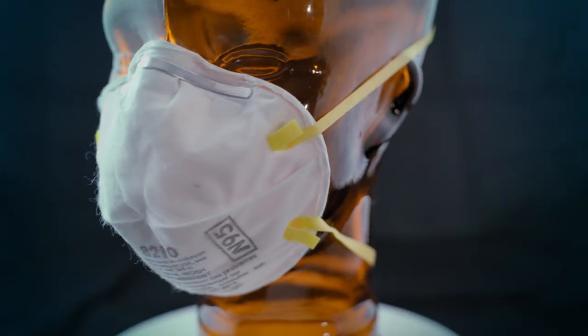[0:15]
As we've all heard, in the wake of the COVID-19 outbreak, there's been a worldwide shortage of some critical medical supplies. The N95 respirator mask is one of the items that's in extremely short supply right now. It's been identified as one of the only disposable respirators that's effective in helping to block the transmission of the virus. After some research, we were able to find a few DIY 3D printed N95 substitutes in PPE communities that claim to offer some protection when no N95 is available.
One design that stood out was from copper3d.com. We'll leave a link in the description. The design is open sourced, it's simple, the print is relatively fast and easy, and the product is reusable and can be shipped in a flat pack.
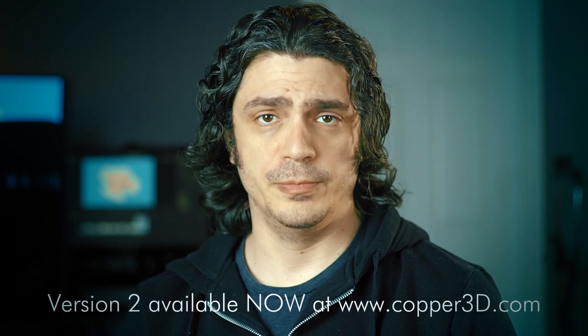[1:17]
Copper3d.com on their website says that this design is only intended to be a prototype and not a final product. They're currently taking notes from members of the community, making improvements to their designs, and from what I understand, they're going to be releasing a version 2 very soon.
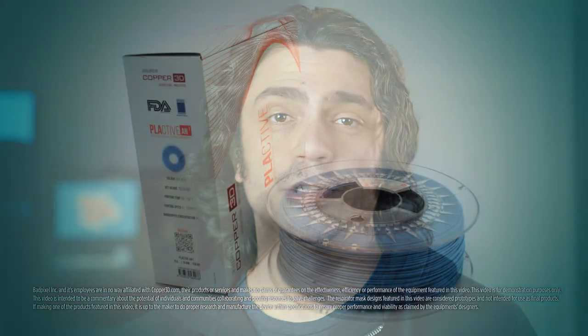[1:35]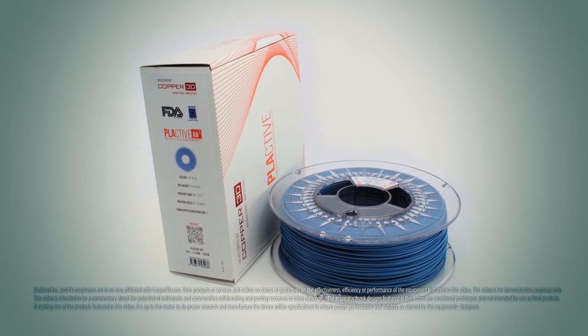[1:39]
Now, a bit of a disclaimer here. We're not medical professionals, so we can't speak to the efficacy of these devices. Copper3d.com claims that this mask design is only viable if it's printed using PLActive, which is their proprietary brand of antimicrobial PLA 3D printer filament.
Once again, the idea here is that these devices are a last resort measure, only to be used when no N95 or equivalent is available. Thinking is that some form of protection is better than nothing at all. When using these devices, people should by no means feel invulnerable to the obvious risks and should continue to act responsibly, practice good hygiene, social distancing, and continue to attempt to limit exposure as much as possible. Now, with all that said, let's dive in.
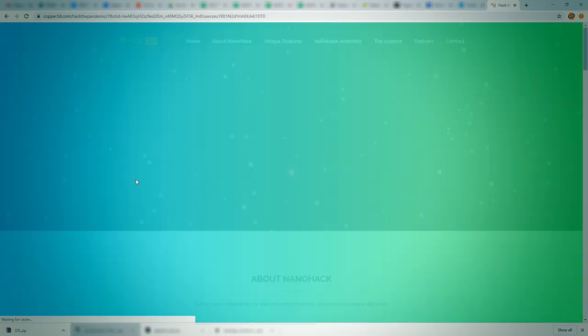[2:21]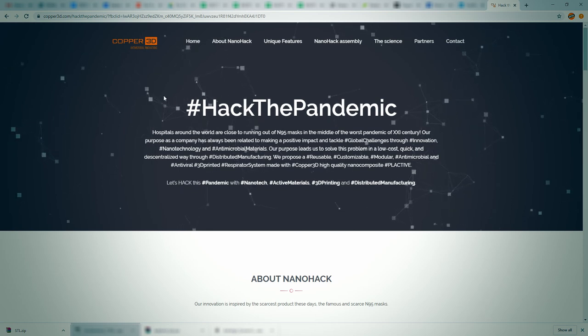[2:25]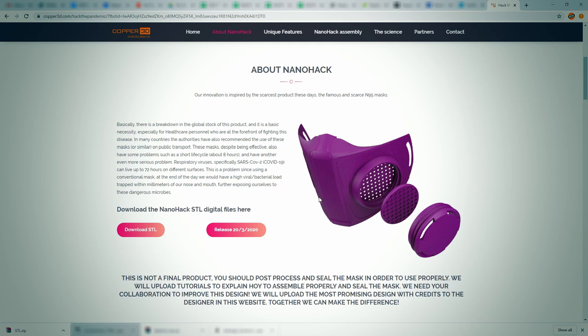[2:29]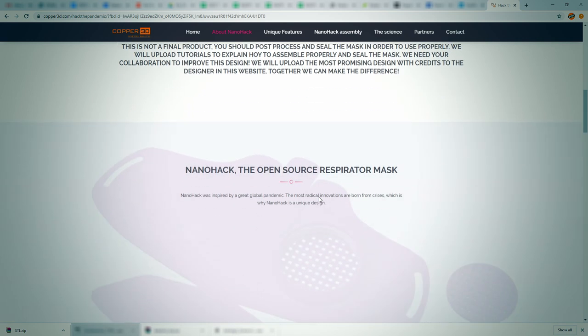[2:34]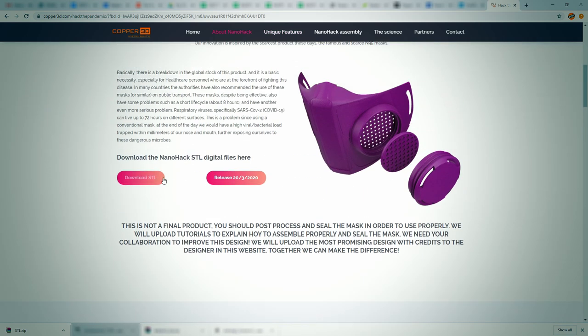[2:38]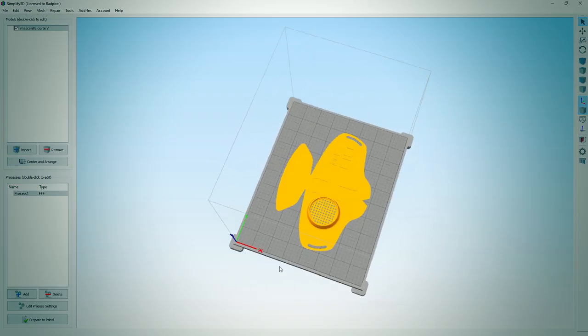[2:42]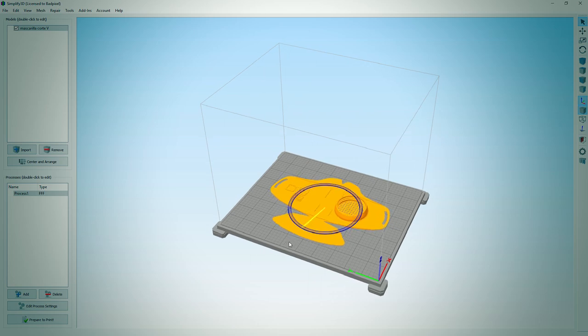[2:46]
Here's copper3d.com/hackthepandemic. On this page, you'll find the most recent design of the copper3d mask and some print and assembly instructions. There's no CAD data here, it's just STL files, but they're good to go. So if that's the way you want to run, you just download the files and drop them into your favorite 3D printer software. Here we see we're using Simplify 3D and the stuff just goes in and it prints great.
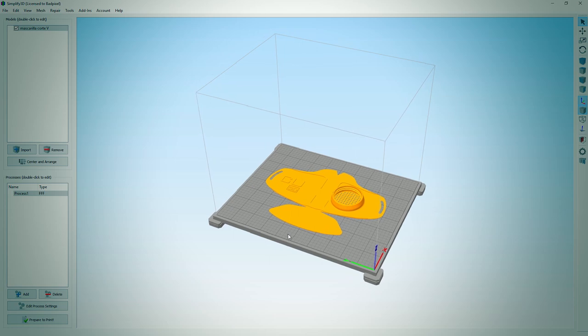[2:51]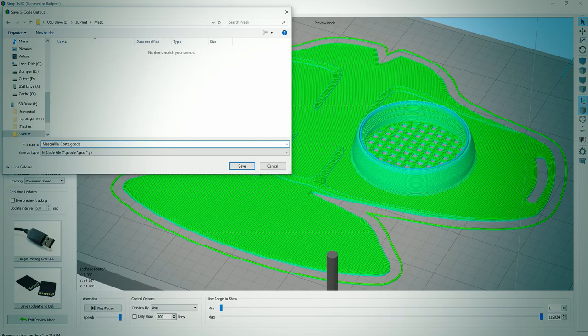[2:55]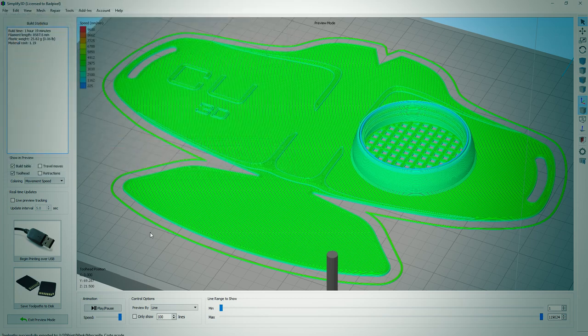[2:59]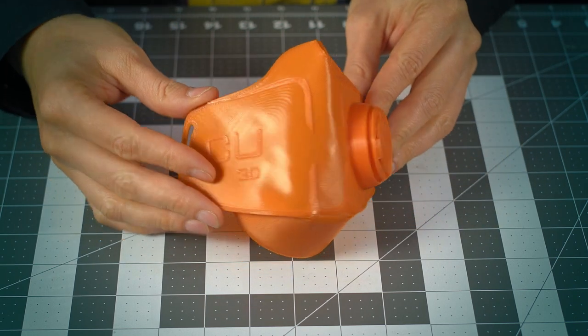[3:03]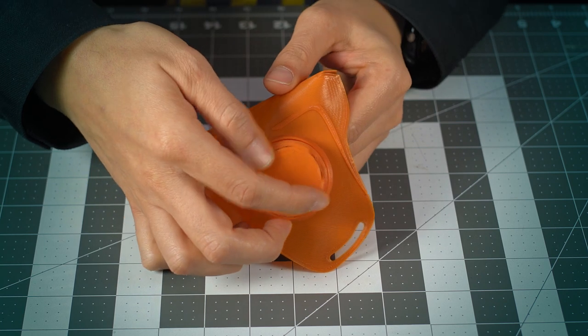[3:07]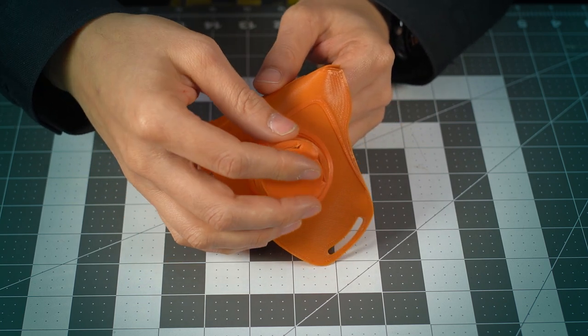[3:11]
We can see that the largest component of this print, which is the main body of the mask, fits easily on the bed of the MakerGear M2, and there's a lot of room to spare. The M2 is a pretty standard bed size, so you shouldn't have any problems with build size on this. This is an unmodded print of the original Copper 3D design. After a few tests, we noticed a couple of issues that were pretty easily solvable with a little bit of time in CAD, which we'll get into in a minute.
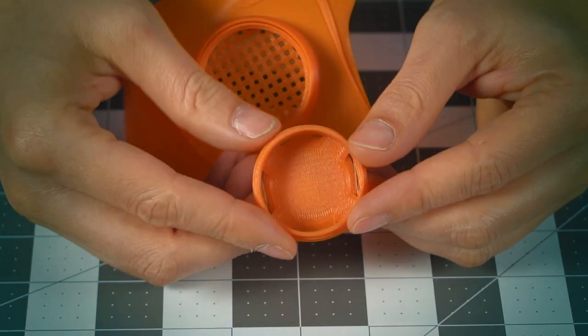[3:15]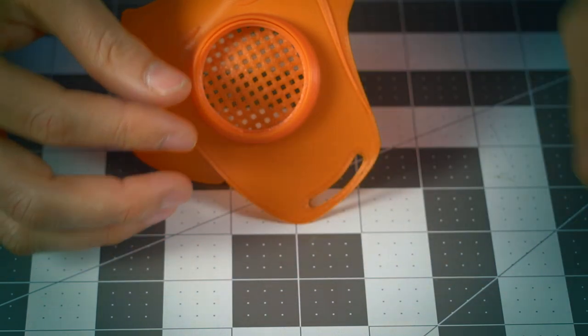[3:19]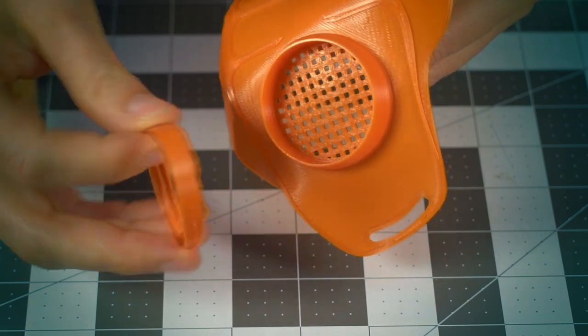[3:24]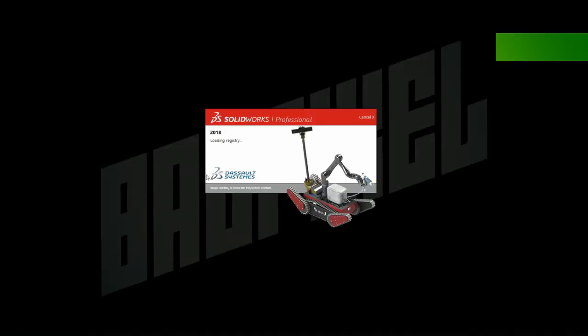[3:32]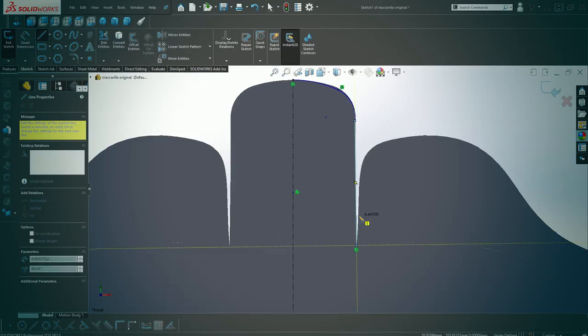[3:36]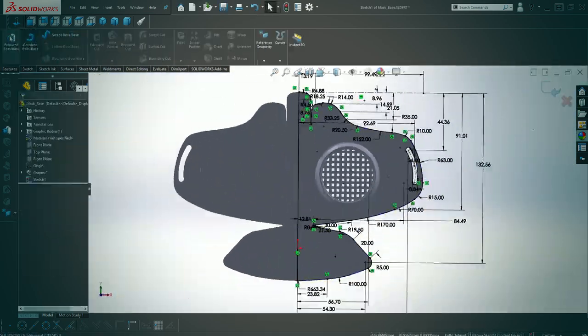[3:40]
Here we can just see some issues with the cap. There were some printing failures due to long spans and some rigidity issues in the walls of the port. There were some failures in the threading, etc. We're using Solidworks for all of our CAD work on this. So basically what we did was just bring in the STL file of the original design and trace it out. Then we modified our Solidworks model.
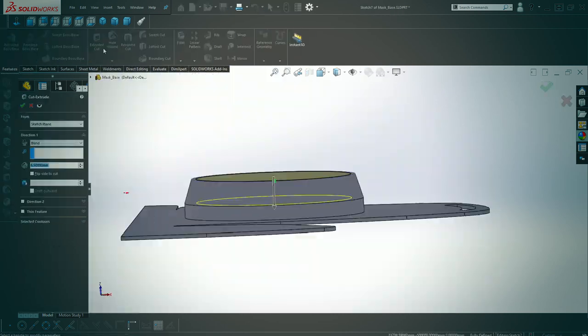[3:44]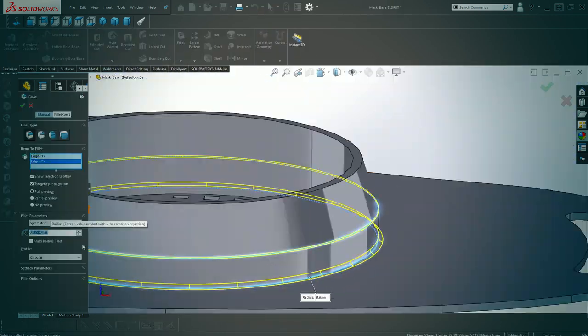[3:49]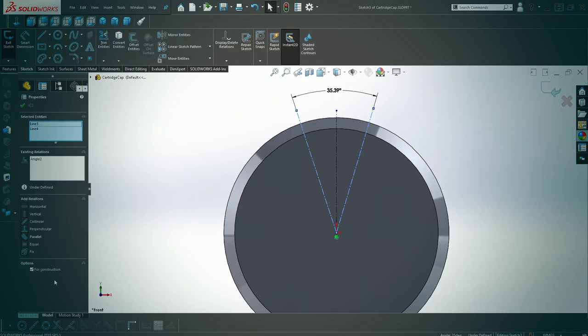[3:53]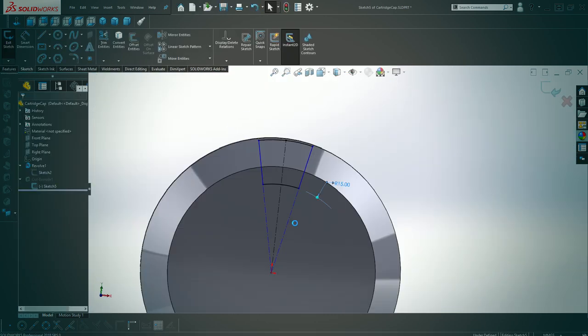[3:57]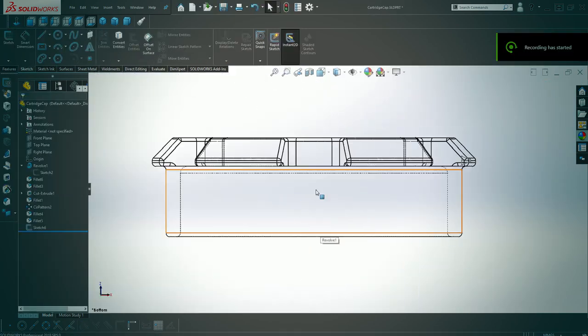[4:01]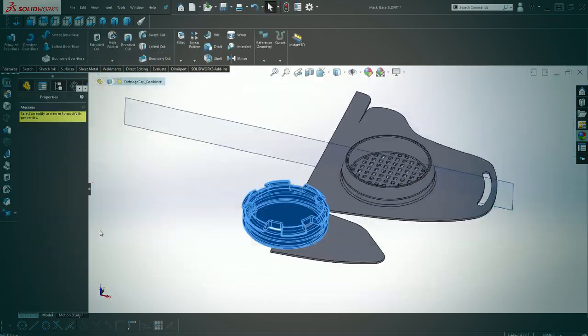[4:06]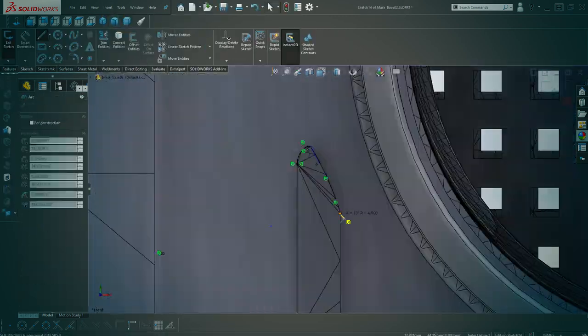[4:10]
So the first issue that we noticed on our test prints was that it was incredibly hard to breathe through one port. The second problem was some rigidity issues in the port walls. If you heat it up and cooled it down a few times when you were forming it to your face, we noticed that the port would start to warp, and this would affect the threading and the overall fit and seal of the cap.
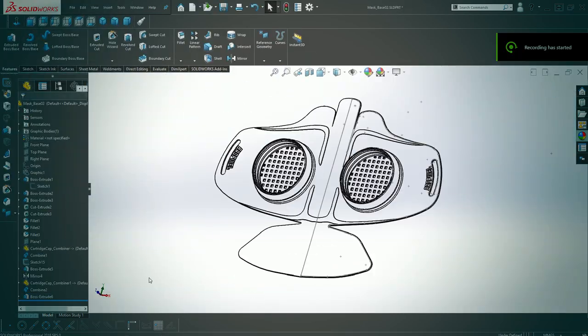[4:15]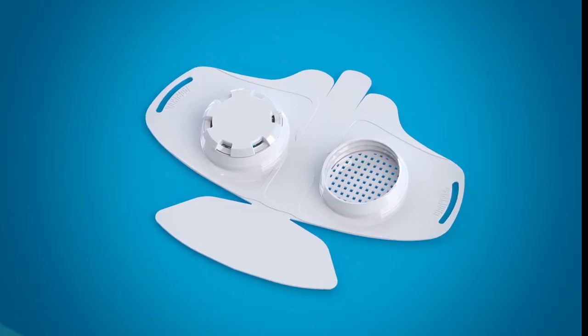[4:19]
Now, our solve for this was a redesign of the cap and thread assembly. We found that once we thickened those port walls and carefully redesigned the tolerances on the thread, we were getting a much more confident fit with the screw cap. The print was able to withstand a lot more heating and cooling cycles without failure in the port areas.
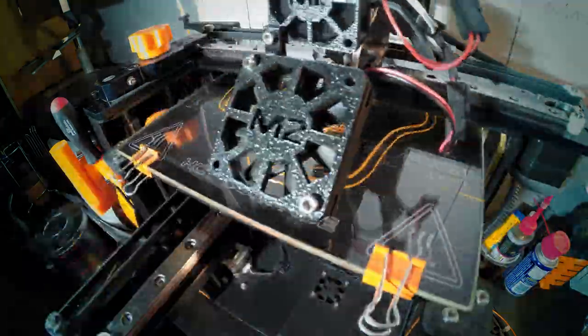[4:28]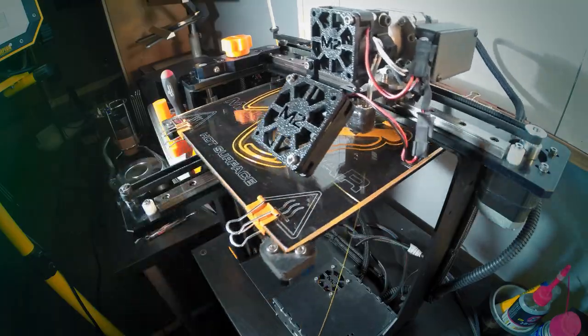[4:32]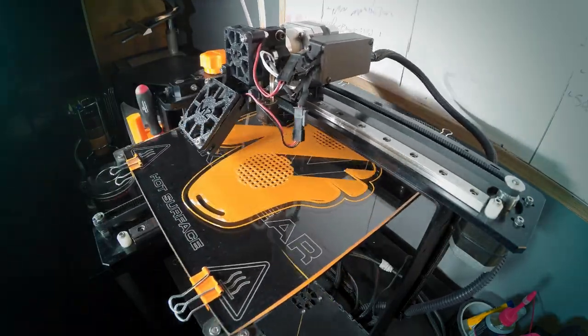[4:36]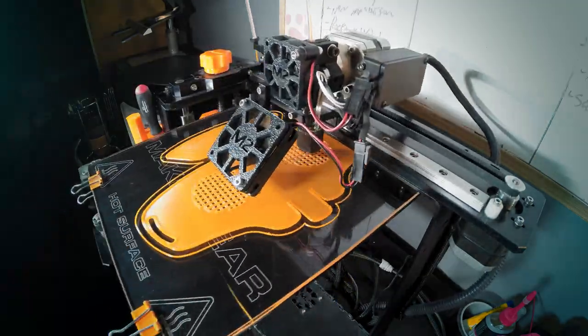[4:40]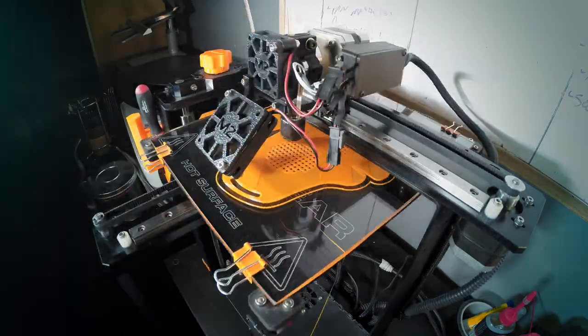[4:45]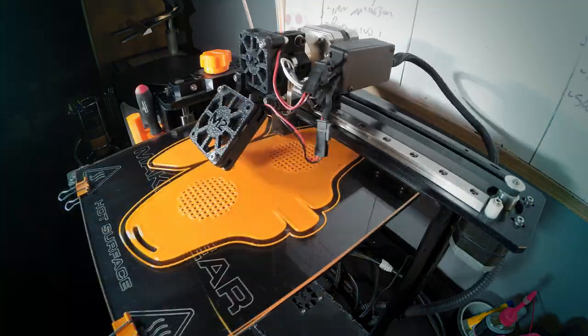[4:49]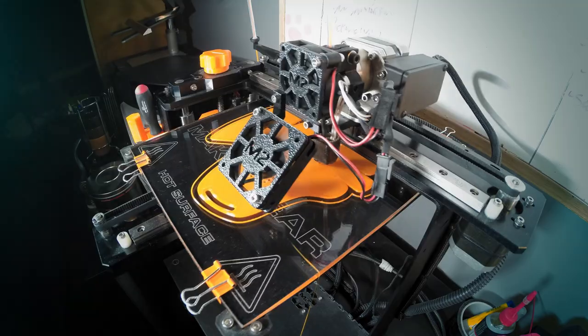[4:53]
For our tests, we were using a regular PLA-based 3D printer filament, which is not recommended for final printing of these devices. Again, in Copper 3D's documentation, they suggest you use PLActive. As with many things these days, PLActive is in pretty short supply and high demand. You can find suppliers that will source it for you, but currently the wait times are pretty long.
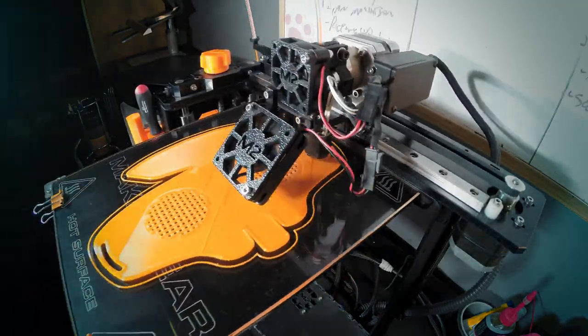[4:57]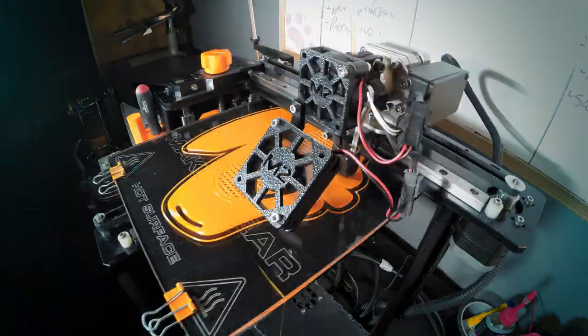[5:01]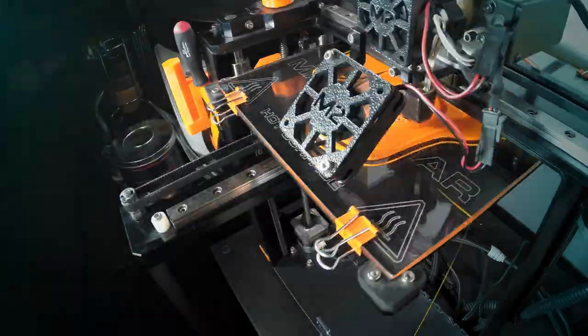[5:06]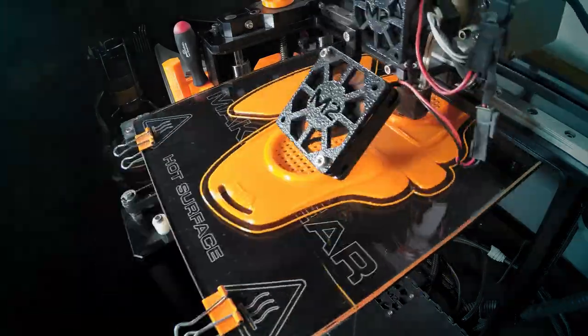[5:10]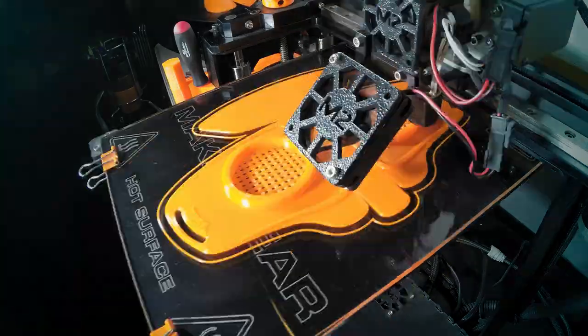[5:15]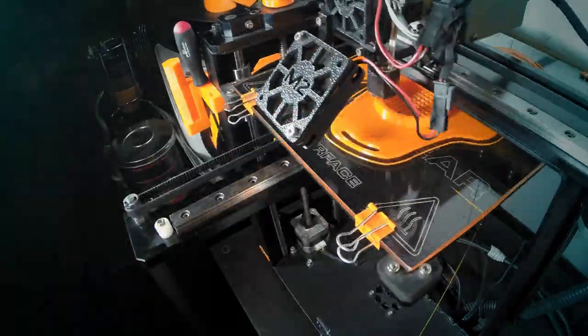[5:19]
And we found a lot of information out there that suggests that other FDA-approved antimicrobial materials could be used in place of PLActive if it can't be sourced. We managed to find something called Purement, which does have an FDA approval. It is antimicrobial, and it's PLA-based filament. We'll be moving on to Purement while we wait for our shipment of PLActive to arrive.
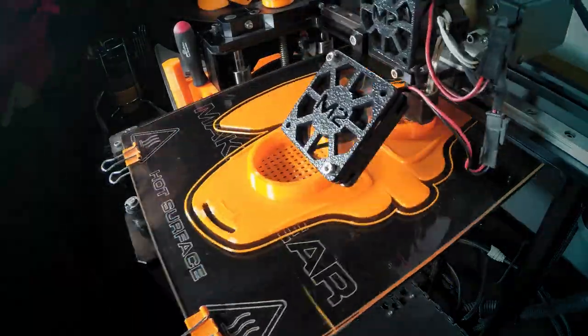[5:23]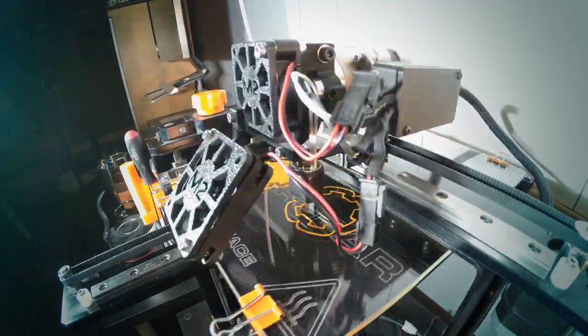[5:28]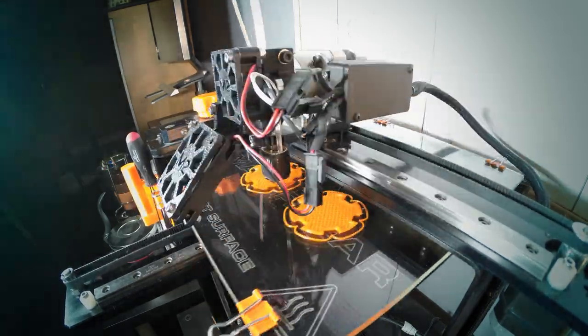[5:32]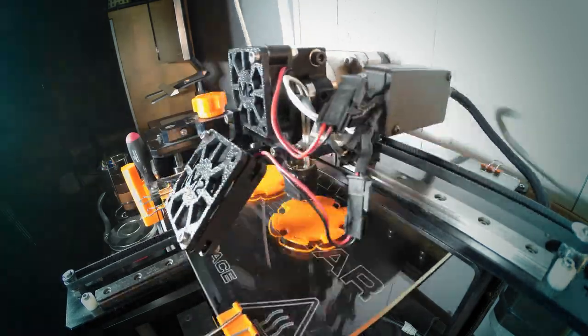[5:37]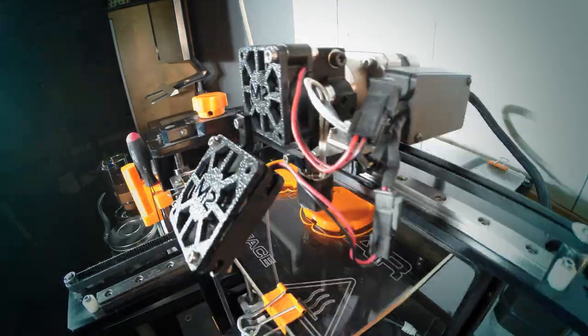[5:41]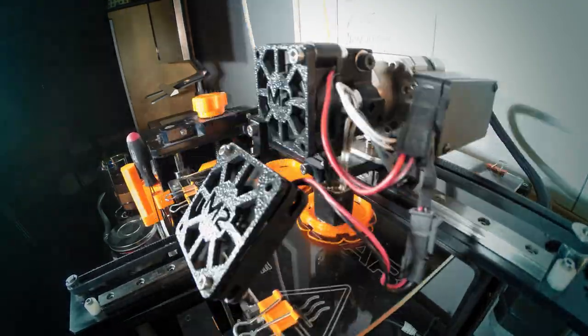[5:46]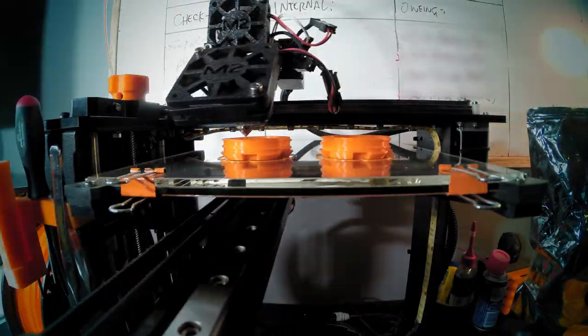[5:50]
One of our 3D printing suppliers suggested that we try an antimicrobial PETG filament. PETG is interesting because right out of the box, it's food safe. It's also more pliable and less brittle than PLA. It's more heat resistant and resistant to chemicals. These 3D printed masks require sterilization after a certain amount of use. That involves submerging the printed components in an alcohol bath. Apparently, a PETG-based material will hold up much better during the cleaning cycles to alcohol than a PLA-based material would.
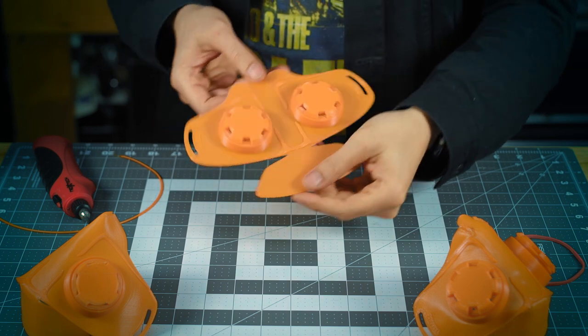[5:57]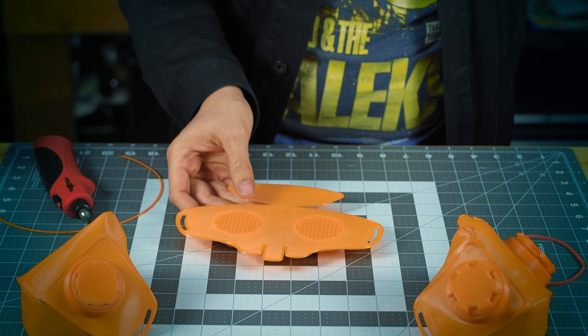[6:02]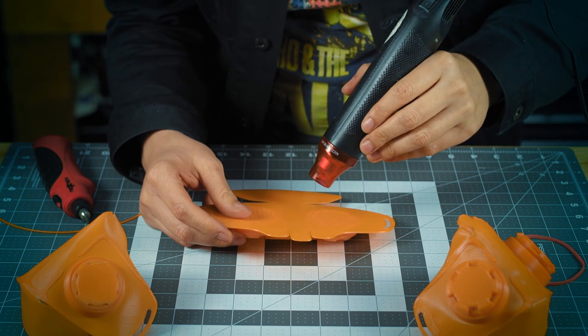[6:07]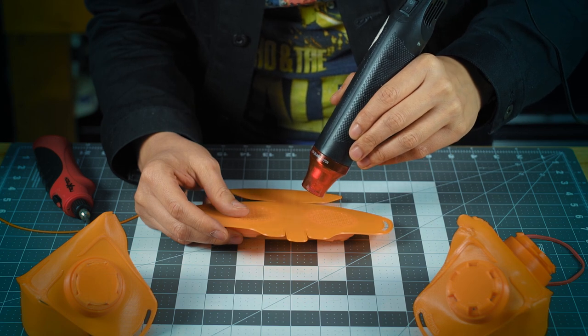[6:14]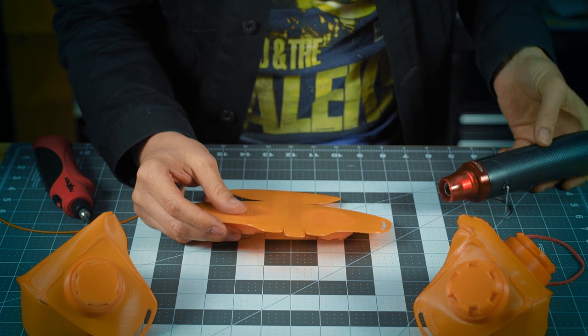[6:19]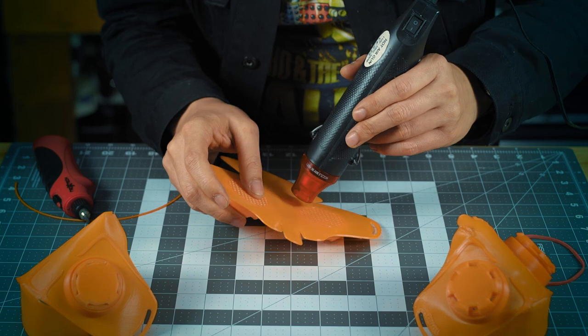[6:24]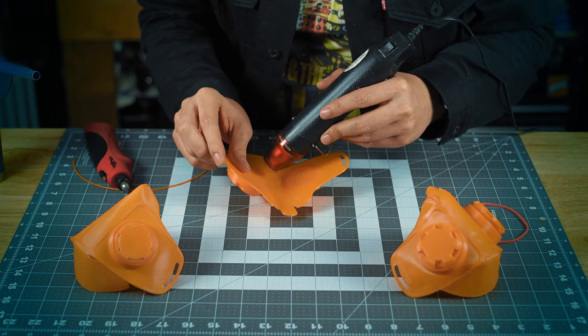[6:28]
One of two methods can be used to form the mask to the user when it's ready to go. The first is submerging the mask in a hot water bath. The temperature should be between 60 and 70 degrees Celsius. When the mask comes to a threshold temperature, the consistency transforms to something that resembles a wet lasagna noodle. We opted for the second method, which is applying heat to localized areas of the mask body. This can be done with a hairdryer or a low-powered heat gun. The process in both cases is a little bit time-consuming, but relatively simple.
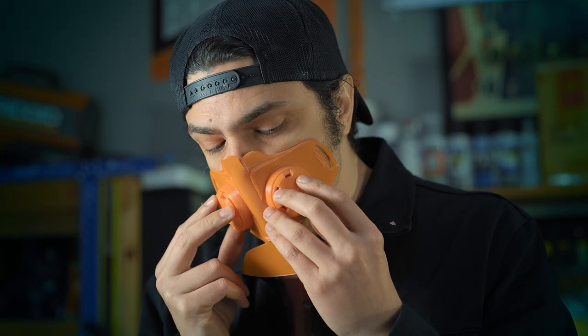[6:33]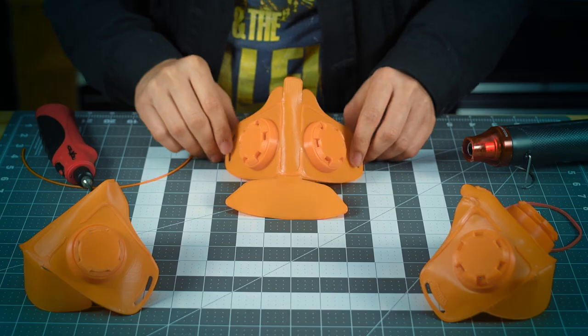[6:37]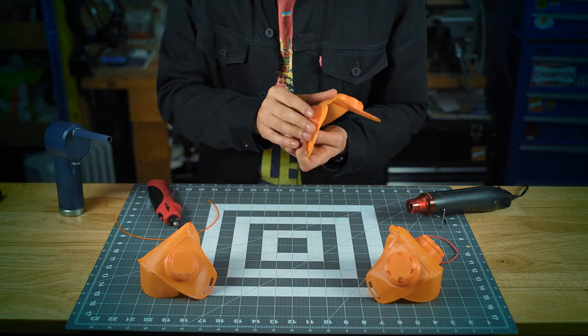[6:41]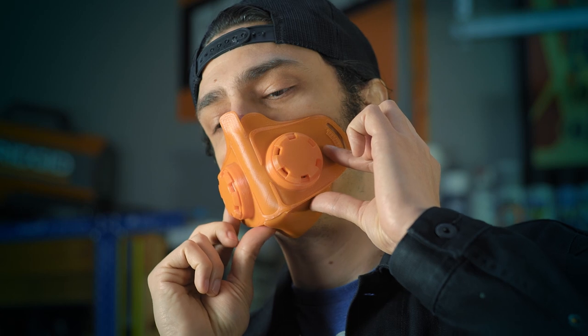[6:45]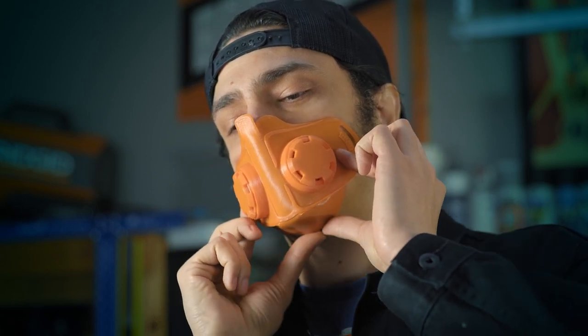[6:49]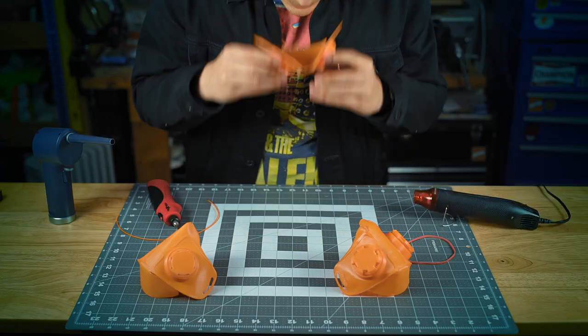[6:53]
The first step is to fold the side flaps back along the ribs on the nose section to roughly match the user's face. The second step is to heat up the bottom flap so that the connection point acts as a bit of a hinge. The idea here is to match the transition angle and the contours of the chin and the jaw. This involves tucking the side edges of the bottom flap into the upper section of the mask.
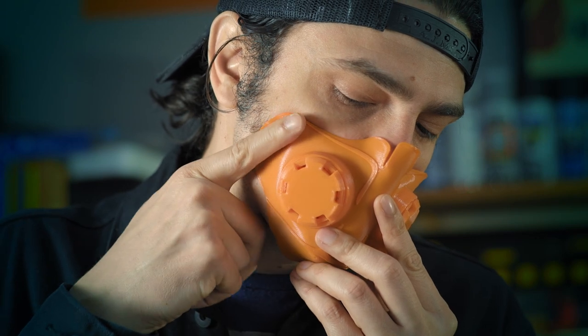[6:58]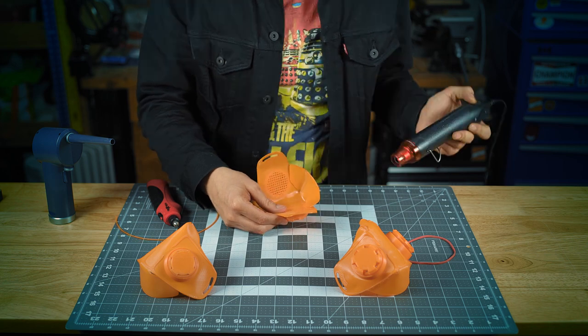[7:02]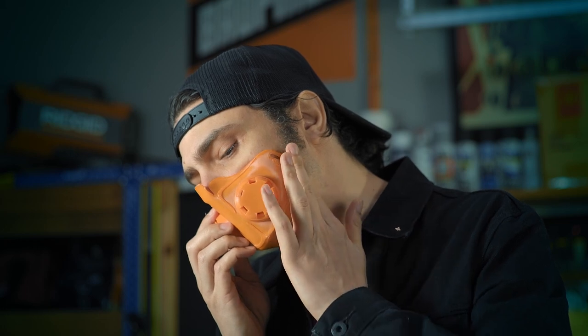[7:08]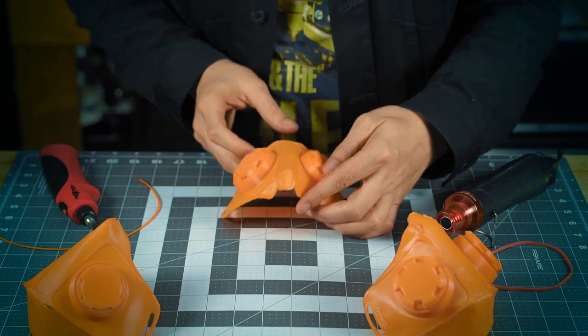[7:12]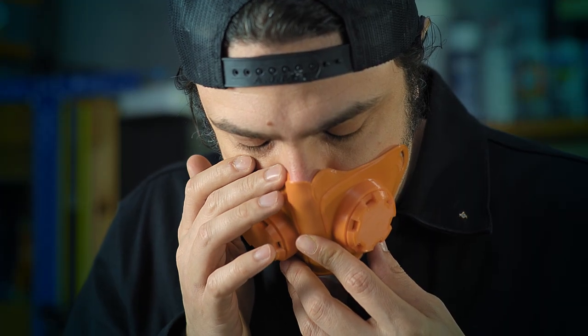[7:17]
Now it's time to move on to the second phase, which is creating a seal. This involves reheating the outer edge of the mask, starting at the throat and working our way up around the perimeter towards the nose. It's important to be careful here because prolonged exposure to the heated plastic could give you a bit of a burn, which I experienced a couple of times in my experiments.
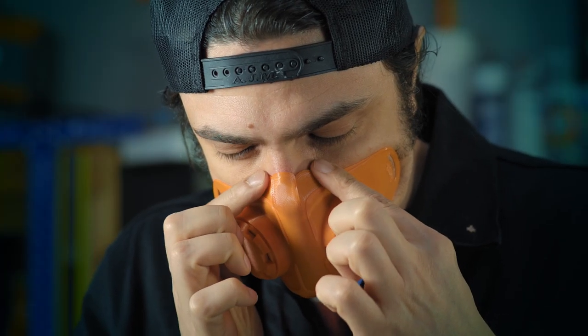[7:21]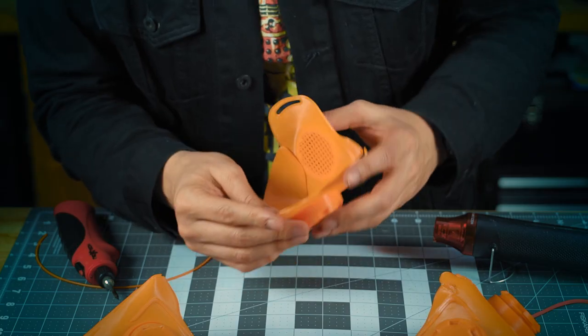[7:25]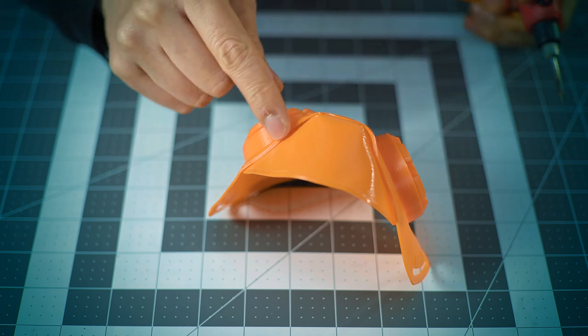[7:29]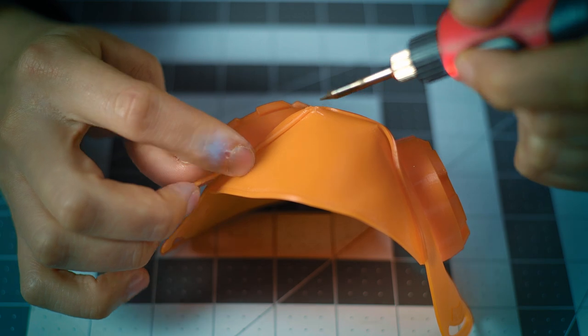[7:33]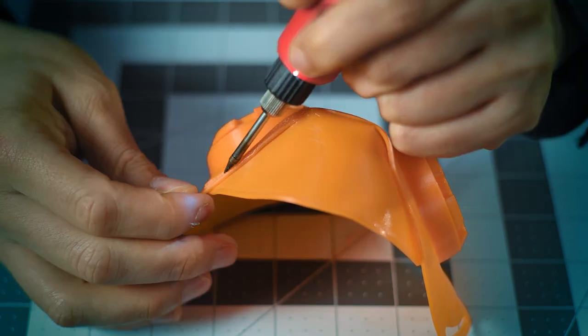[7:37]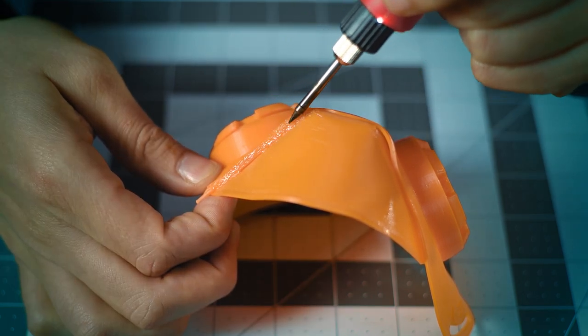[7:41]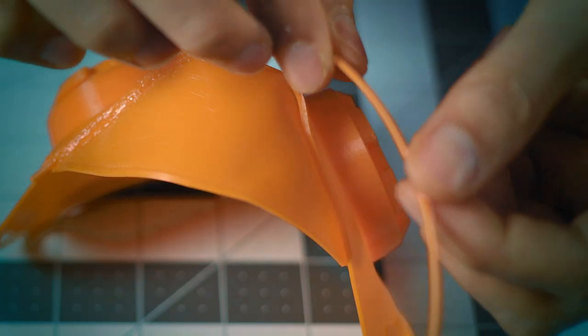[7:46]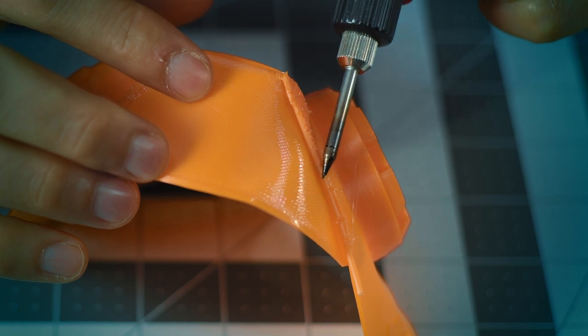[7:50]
Once the mask has been properly fitted to the user's face, you're going to find some pretty large gaps where the panels have been folded and tucked, mainly in the chin area and the nose area. There's plenty of suggestions out there on how to seal this up. What we found works best is to just run a raw piece of filament of the same material along the gap and weld the seam shut using a small soldering iron.
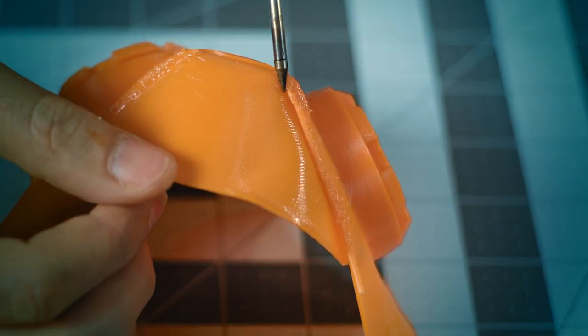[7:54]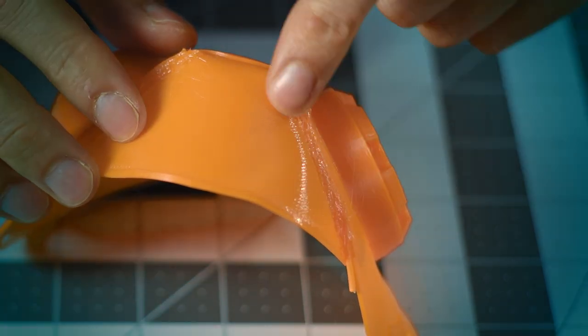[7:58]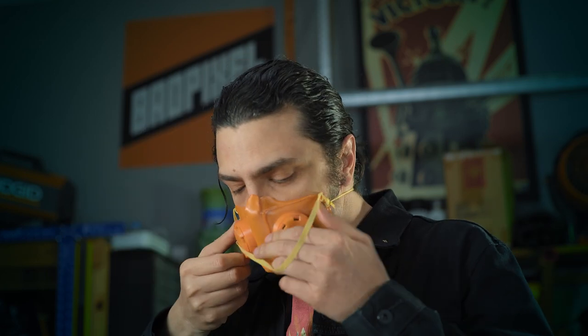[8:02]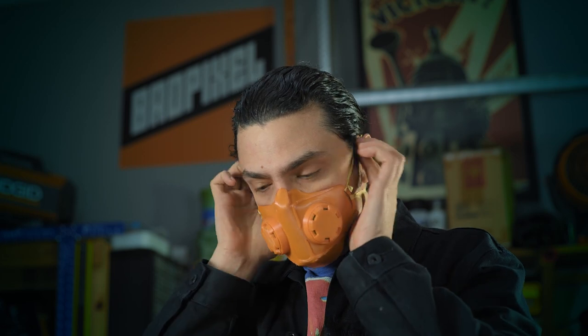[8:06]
Not pictured here was the additional seal that we added. We suggest running a bead of silicone along the bridge of the nose and the bottom of the jaw. These are areas that we found were the most prone to leakage.
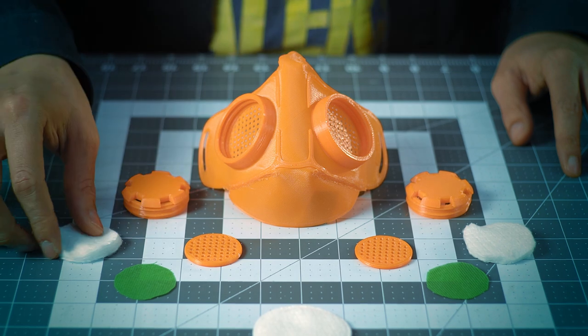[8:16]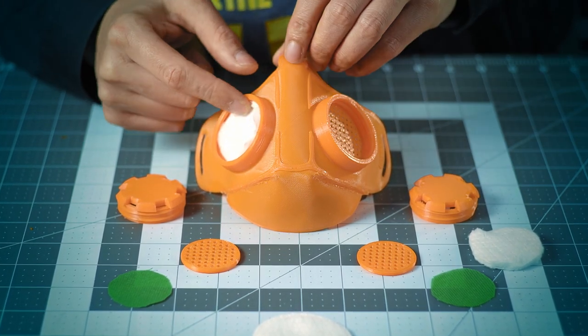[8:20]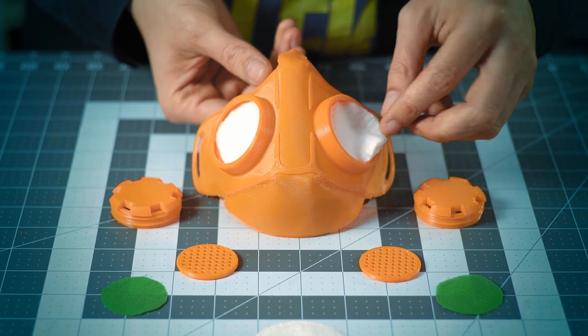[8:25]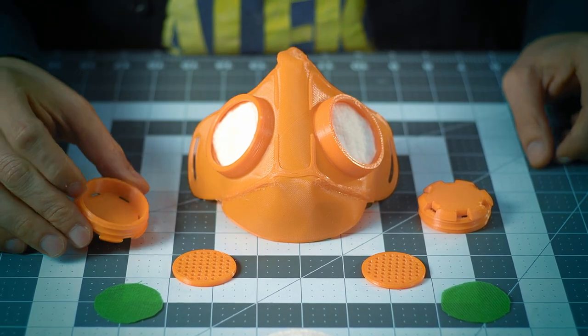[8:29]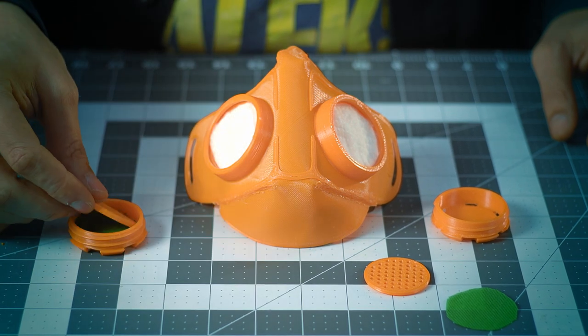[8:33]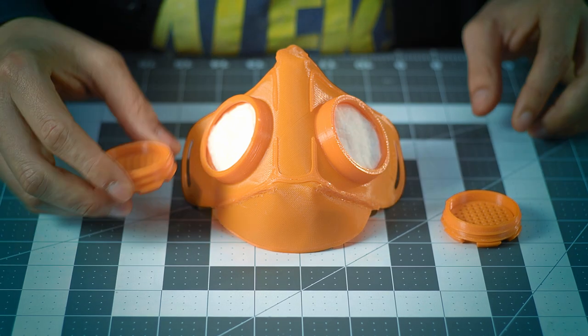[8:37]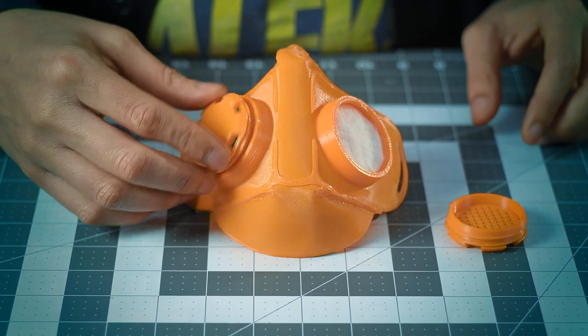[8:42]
The original documentation in the community have offered plenty of suggestions on what to use to fill the ports for filtration material. The most popular option seems to be the 3D printed antimicrobial plastic disc, which is included in the STL files, sandwiched between one layer of cotton padding and one layer of non-woven polypropylene. The cotton padding can be sourced from any regular makeup removal pad and cut down to size, and the non-woven polypropylene can be sourced from a reusable grocery bag.
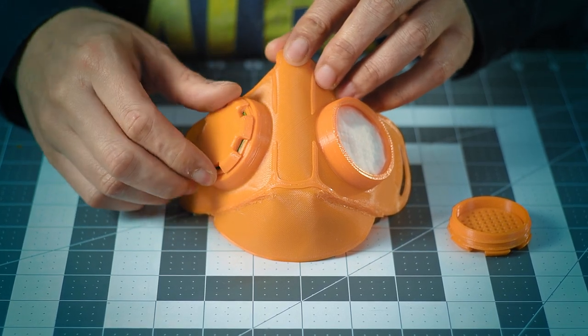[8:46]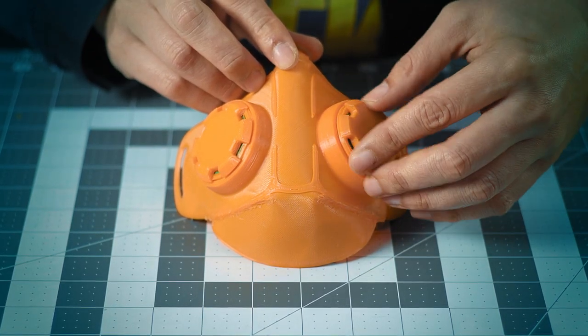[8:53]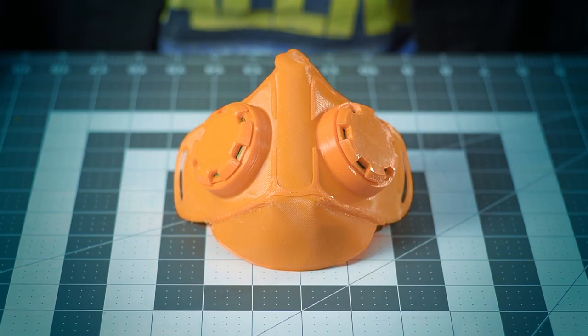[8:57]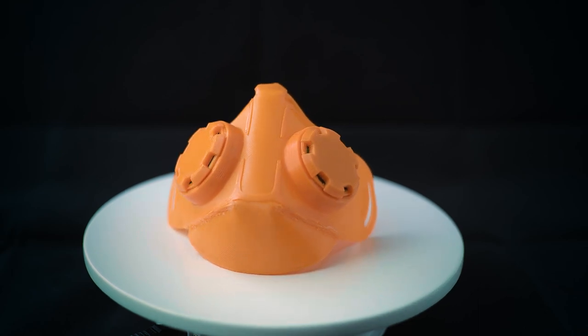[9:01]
Another option that was provided was actually to cut down an N95 mask and load the ports with one layer of N95 material. In this configuration, one N95 mask could potentially be used for several reloads of one reusable mask, or it could be used to load several masks at the same time.
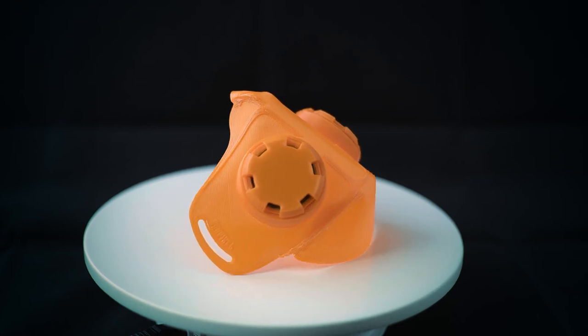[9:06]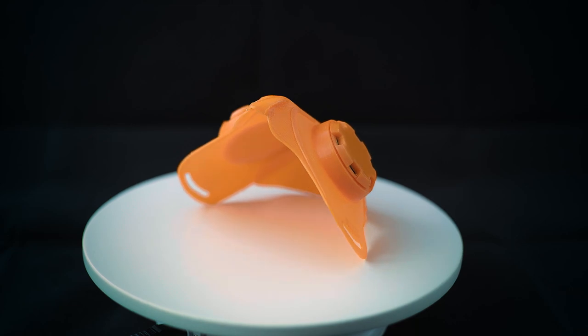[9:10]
We're lucky we live in a time where we're surrounded by technology that can help us endure and limit the severity of situations like this. Please be responsible and follow the guidelines set out by your government and the WHO. This virus has staggering implications if left to spread without intervention. Individuals can have a dramatic influence on the severity of the outcome of the crisis. Please do everything you can to distance yourself from others. We'll come out of this and connect on the other side. In the meantime, those of us with loved ones at high risk are counting on you.